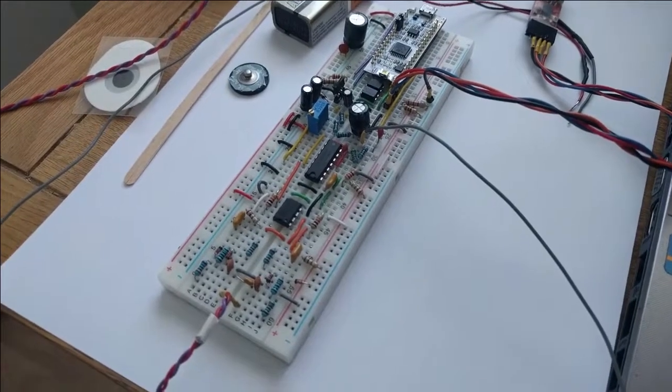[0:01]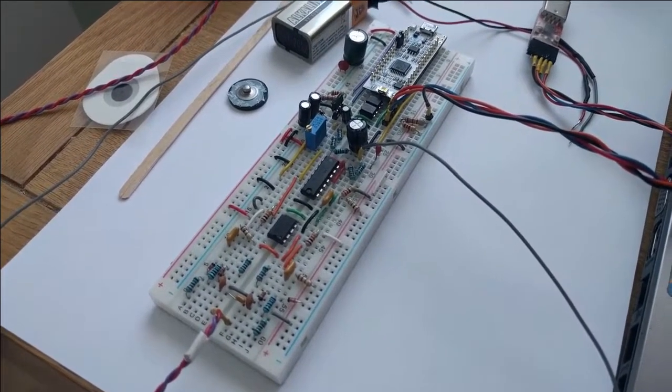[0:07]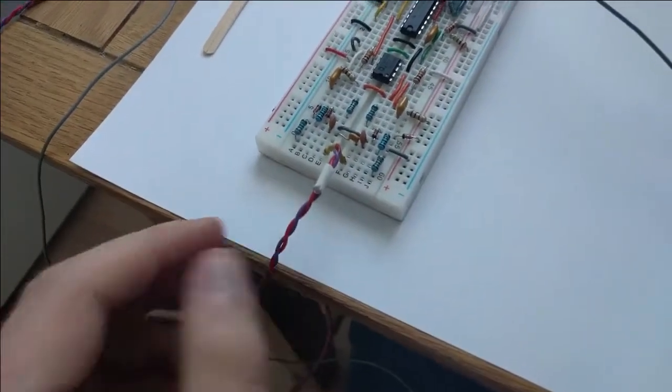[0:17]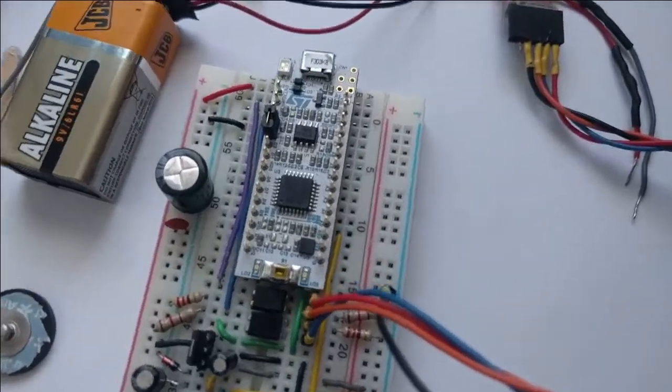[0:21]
In this video, I'll be doing an overview and demonstration of my final year project, which was to design and build a brain-computer interface, or BCI, based on an electroencephalograph, or EEG. This is the EEG measurement circuit. It's single channel. These are two measurement electrodes, which I'll get to in a minute. We're sampling at 1000 Hz, and this is my controller.
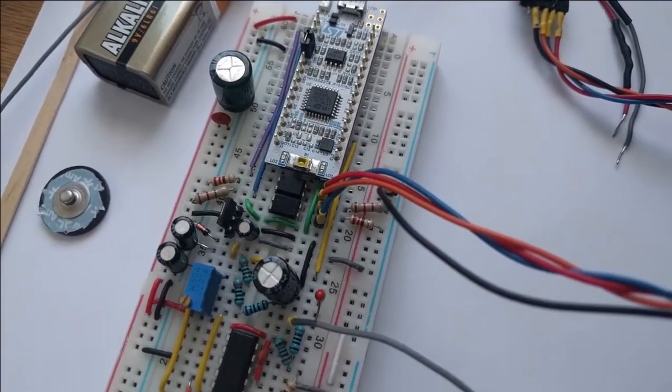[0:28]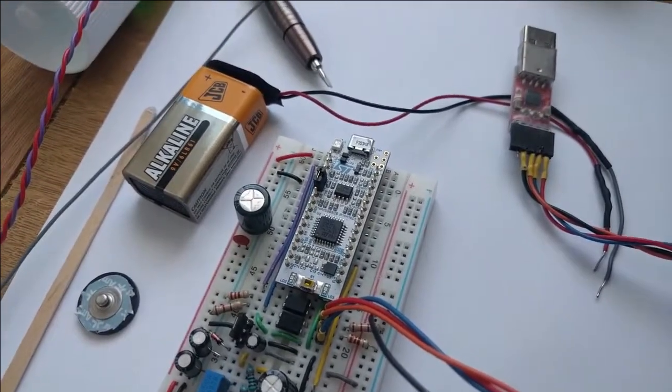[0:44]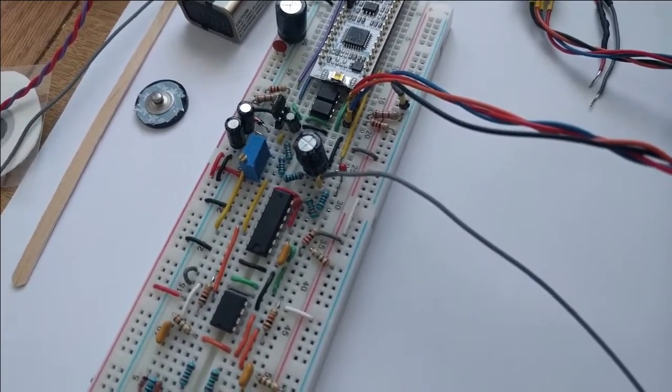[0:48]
We're using an STM32F303K8. That's sampling and then communicating with the PC. It's communicating through UART, but because I wanted the circuit to be isolated from the PC, there are optocouplers on the UART lines isolating the circuit from the PC. It's powered by a 9-volt battery, and we're using a driven right leg as our ground, so that'll be used to compensate for interference on my body, which will be mostly 50 Hz noise from mains voltage.
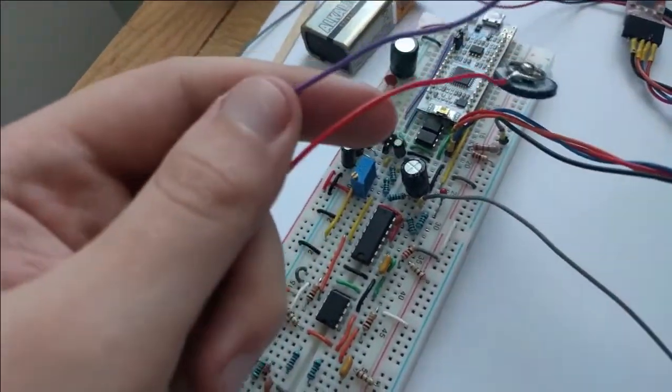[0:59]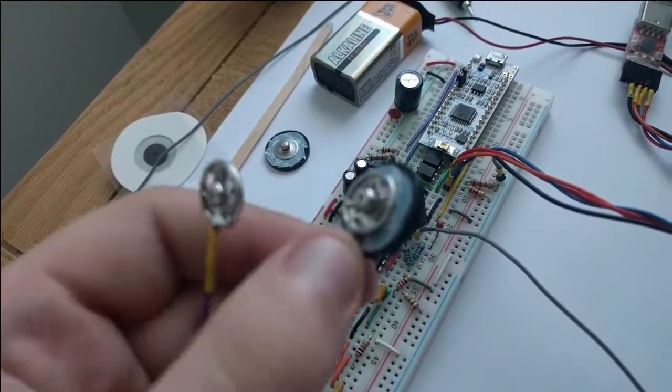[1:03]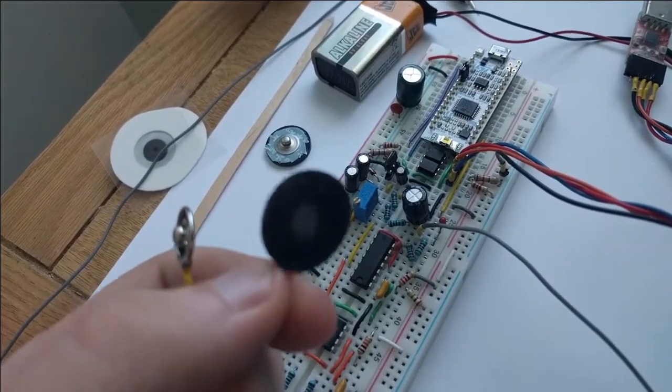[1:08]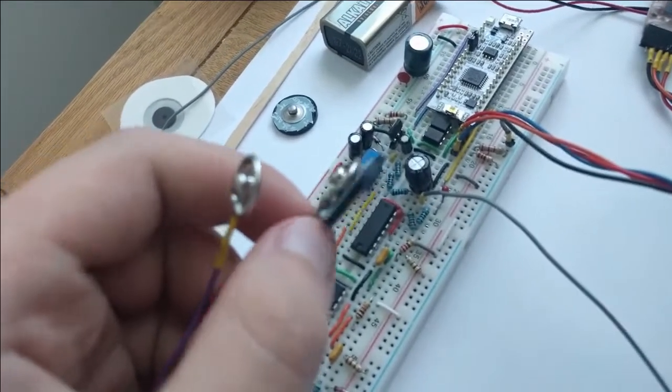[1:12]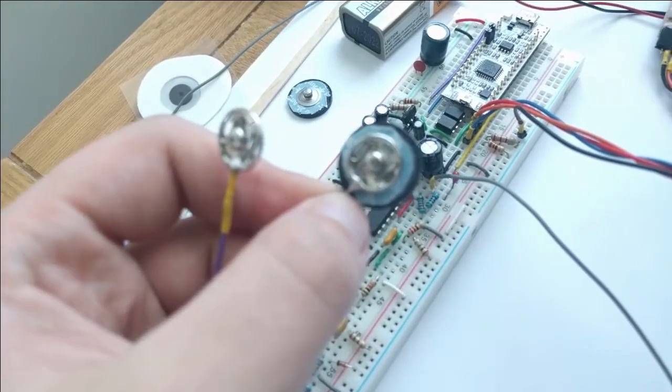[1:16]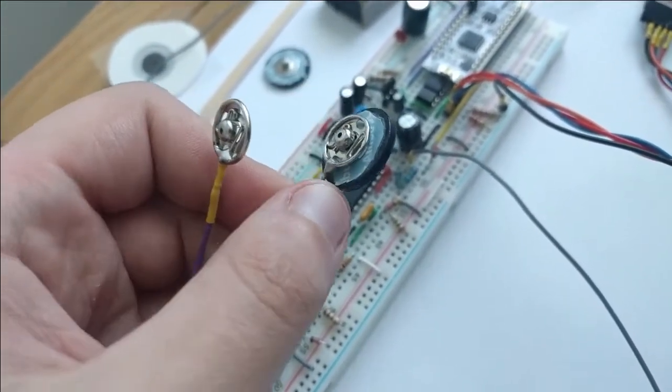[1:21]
So I'll show you the electrodes. These are the two measurement electrodes I'm going to be using. I have this homemade electrode, which is made from an ECG pad. It doesn't really want to focus. Give it a second, it might focus or not. There we go. So this is from an ECG pad, which I have here.
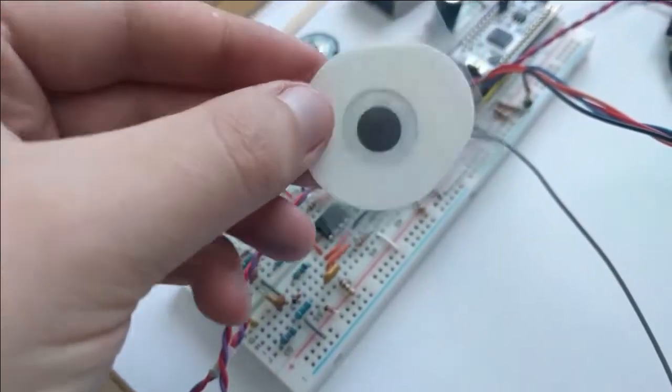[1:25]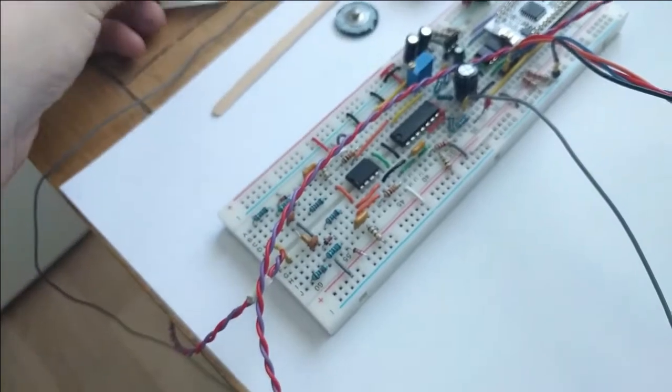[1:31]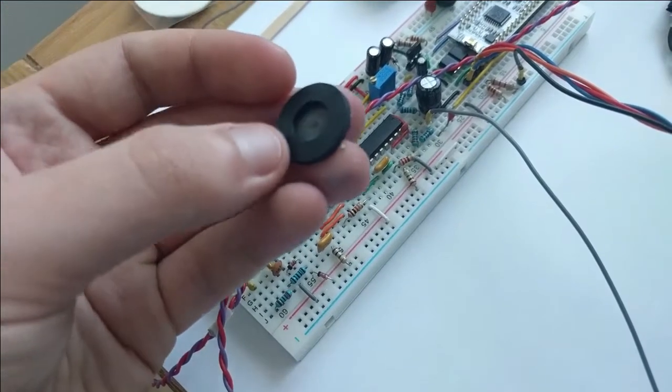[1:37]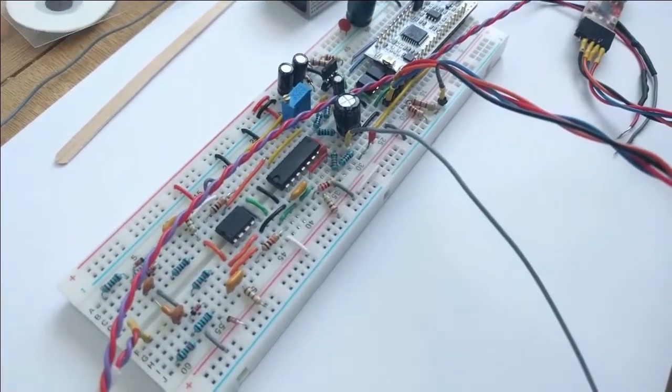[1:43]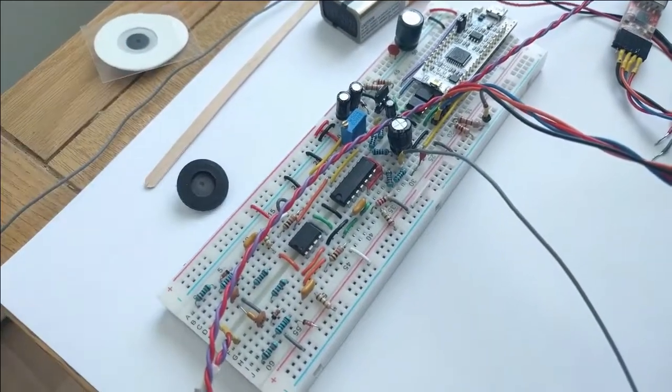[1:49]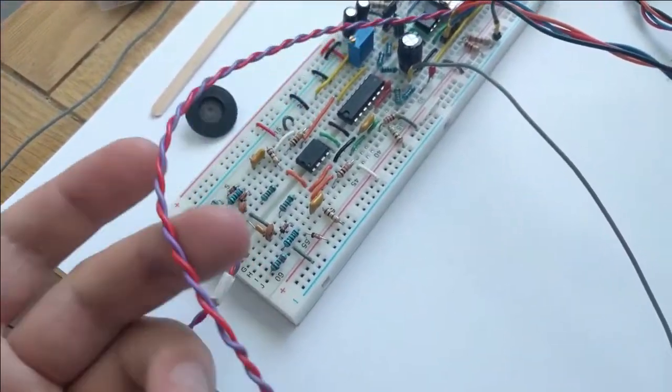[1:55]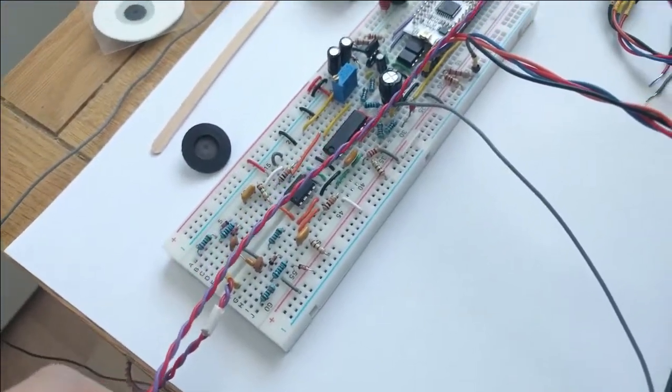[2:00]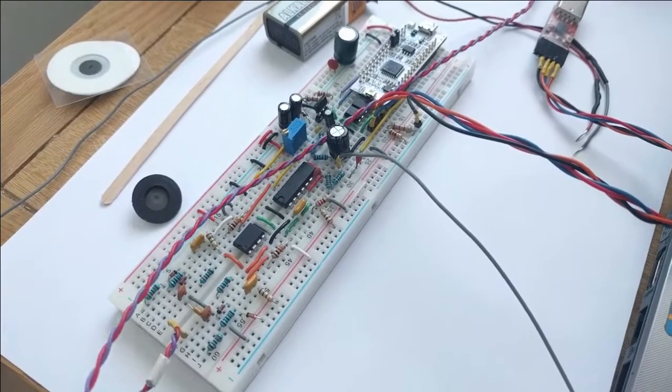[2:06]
These you can get in bulk for fairly cheap. I just cut out the center, took out the gel, and glued on a rubber shower hose washer. So that is now going to work as a reusable EEG cup, which if made this way is much cheaper than buying EEG cups, because they can be tens of euro. This per electrode is less than a euro, so fairly cheap. These are twisted together to reduce noise from EMF. I will be back in a minute with everything all set up, and I'll show how the BCI will work and then show you some EEG signals.
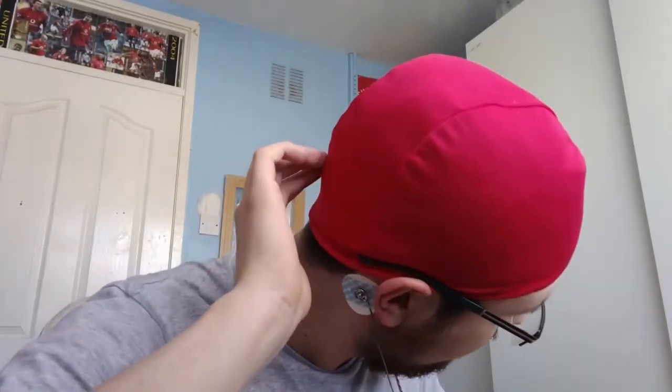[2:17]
So I have everything connected up now. I have the two measurement electrodes connected, one at Oz from the 10-20 system. You might be able to see Oz there, a little bump there. Then I have the second measurement electrode connected to here, my left mastoid. And the driven right leg is connected to my right mastoid here. So between Oz and the left mastoid, I should be recording the EEG from the occipital lobe, which processes visual information. The easiest thing I can trigger is alpha waves, which are in the region of about 10 Hz.
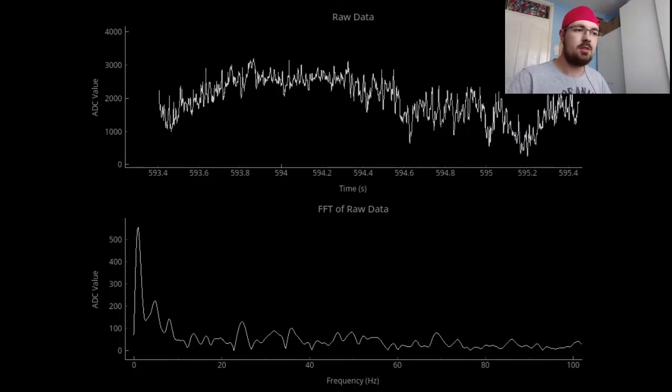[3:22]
They can be triggered by wakeful relaxation, which basically means if I close my eyes and relax, you should see a 10 Hz spike. With my eyes open, you should see it kind of level away everything else. There'd be just, across 0 to 100 Hz, a lot of random peaks. I can't really say what any of them are, but once I close my eyes, I can definitely say if there's a peak at 10 Hz, that should be alpha waves. So I'm going to stop moving and start this recording and show you the trace.
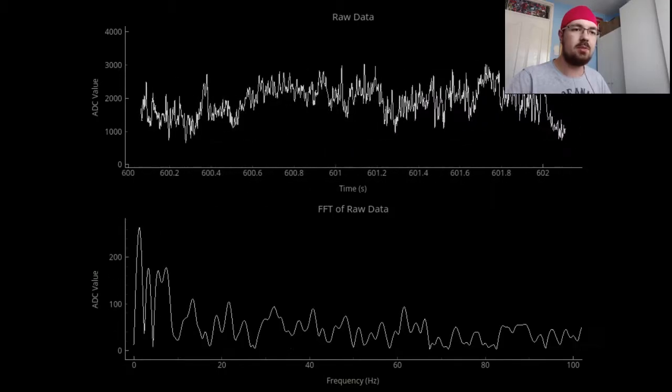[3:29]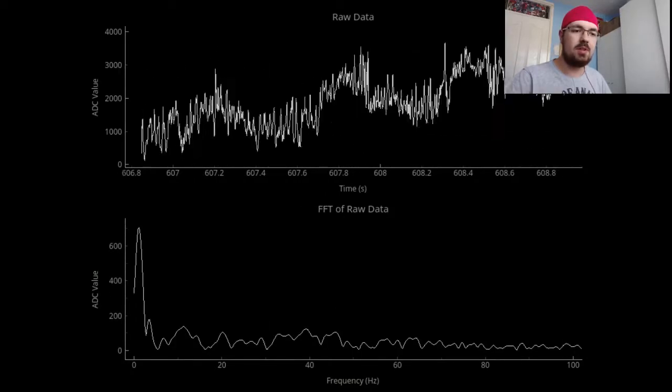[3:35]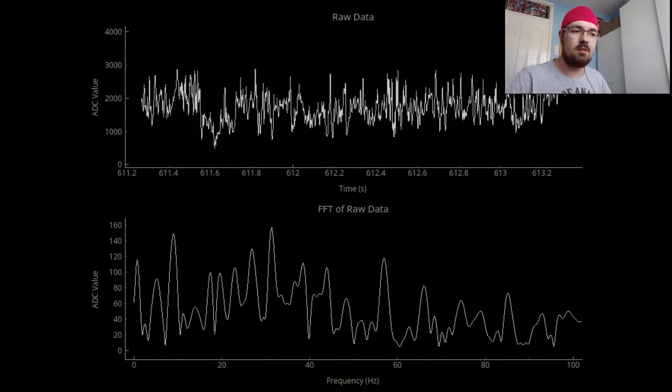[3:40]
So now on the top you should see the trace from the EEG, that's the real-time trace. And you see there's a lot of activity, but I can't say exactly what it's caused by. And down on the bottom we see an FFT of every 1 second. And you see that 50 Hz is taken care of fairly well, it's not causing a peak. But once I close my eyes, I should see a big spike around 10 Hz, and should also see that in the real-time trace on the top. So I'm going to close my eyes now and hopefully see that.
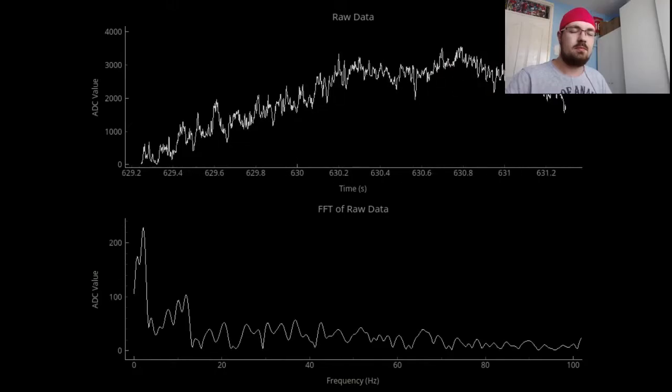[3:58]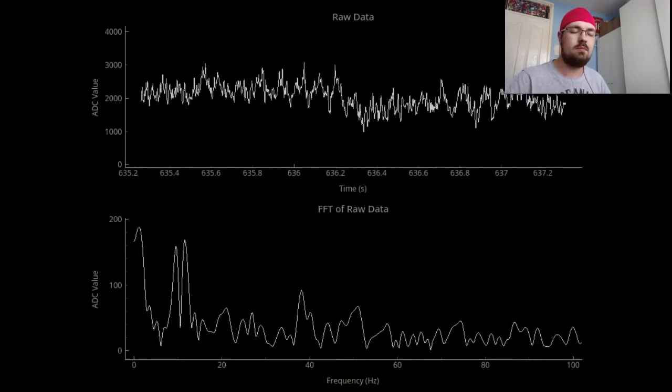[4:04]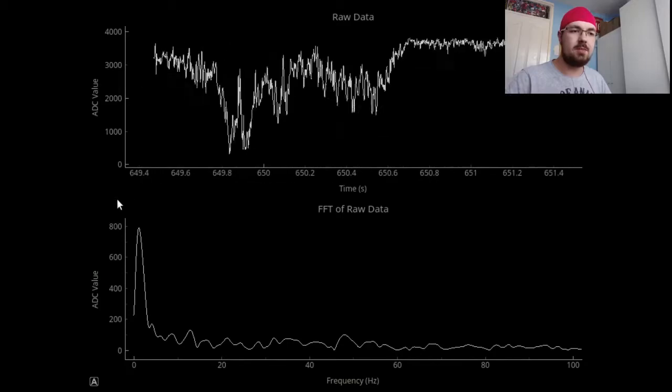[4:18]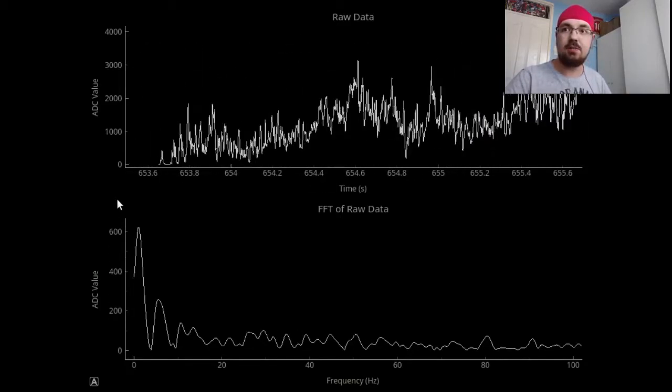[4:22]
Yep, I just saw, when I opened my eyes, there was a 10 Hz spike there. So that proved that it does work. So, yeah, that was the EEG measurement. I'm going to go on to the brain-computer interface now.
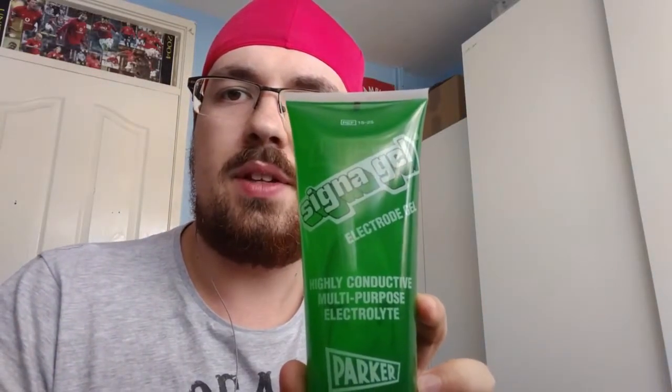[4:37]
I forgot to mention in the last part of the video, I filled up these cup electrodes I made with this Signa gel. This is conductive gel, which will make sure there is a connection through my hair to my skull. Before putting on the electrodes themselves, I used this skin prep. I rubbed that into my scalp, and that is to reduce the electrode-skin impedance, which would give me a better signal. So now I'm going to get on to the BCI that I created and just start recording that now.
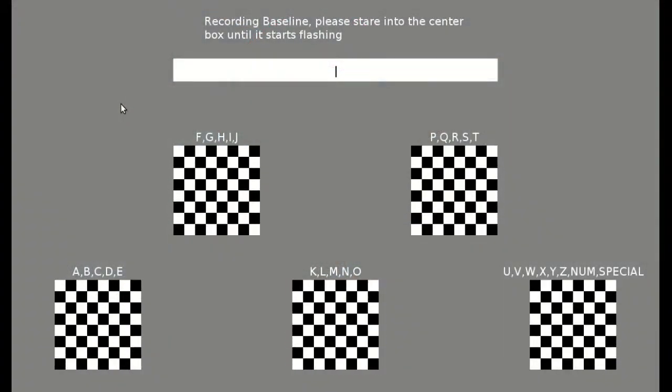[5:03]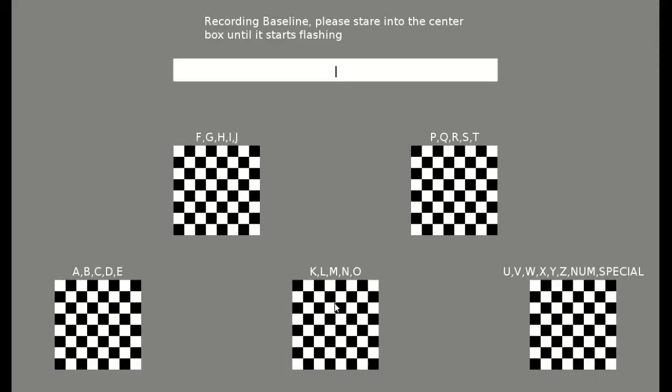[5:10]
So here we have five flashing checkboxes. This one here, to the left, is flashing at 10 Hertz. Then we have 20 Hertz, 15, 5, and 12 Hertz. With these, I'm trying to trigger steady-state visually evoked potentials. That basically means if you flash a constant stimulus, in this case a flashing checkbox, at a constant frequency, I should see that frequency in the occipital lobe from the brain processing the flashing, the changing of the checkbox.
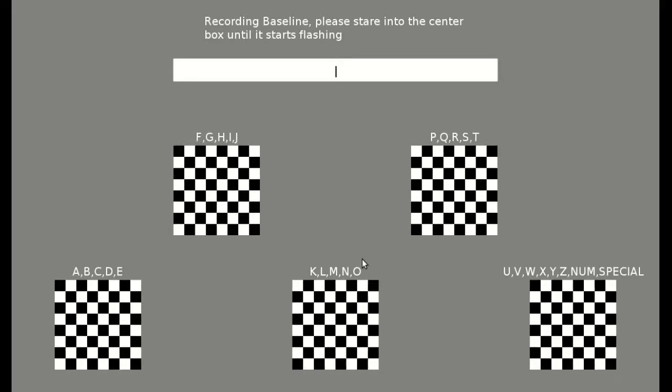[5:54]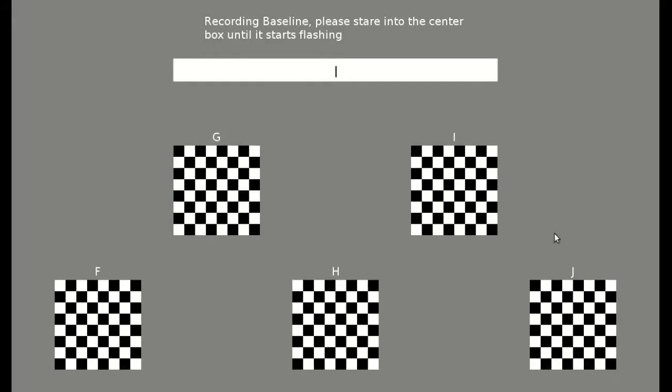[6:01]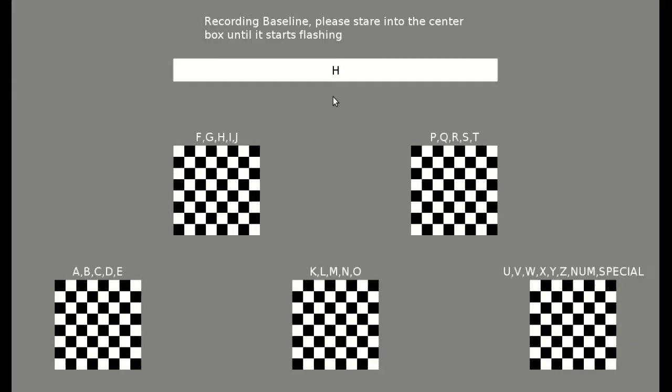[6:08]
So by using this, I have this simplified keyboard here with all the English letters and numbers and some special characters. If the user looks and concentrates on one of the checkboxes, it should click it and then subdivide, showing that option. I'll show that now, click into the 20 Hertz box. You see all the options get spread out between them, and we'll say we'll pick H. So they're looking at the 15 Hertz box. Up here we've typed H. So this is working as a keyboard.
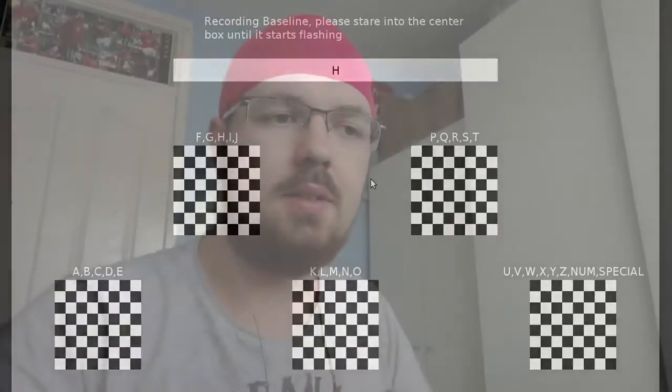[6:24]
So the user doesn't have to use their hands. They can just look at the different checkboxes and the BCI should react to where they're looking and type out stuff without them having to move at all. There is more work to do on the feature extraction side. Right now it's just working through mouse clicks, but it doesn't work reliably through the signal processing, and I've tried. There is a lot more work to be done there. I do believe it can work. I do have proof that my circuit can measure SSVEPs, but extracting them in real time, I need to continue work on that for it to become reliable. I think I will continue on that in the future.
So that is my final year project, or a quick overview of my final year project. I'm going to post instructions on how I made the circuit and the BCI, and I'm going to post the code and stuff like that online, probably up on my blog.